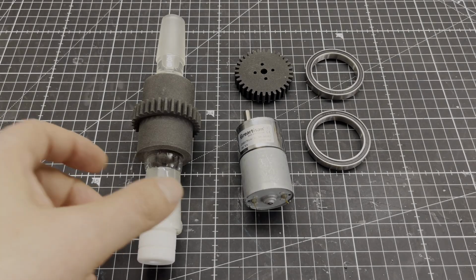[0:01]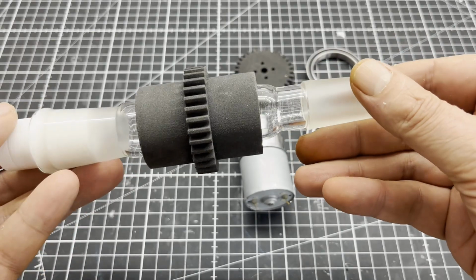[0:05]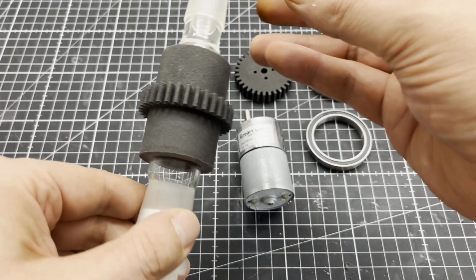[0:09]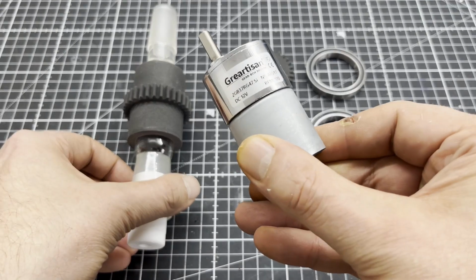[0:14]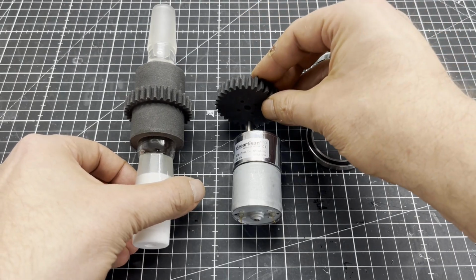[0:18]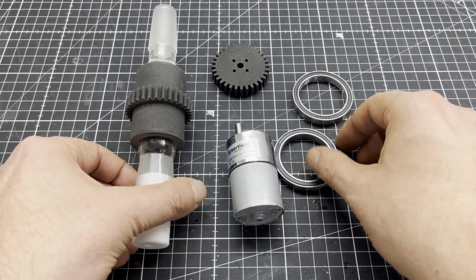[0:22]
The project started with two 3D printed parts, a 24-40 ground glass joint adapter, a 12-volt geared motor and two ball bearings. The part on the adapter was printed to a press fit. I had to heat it with a hot air gun to insert the adapter. The white plug is a Teflon overhead stirrer bearing. You can get it for a few bucks on AliExpress.
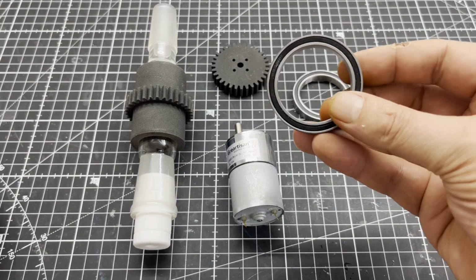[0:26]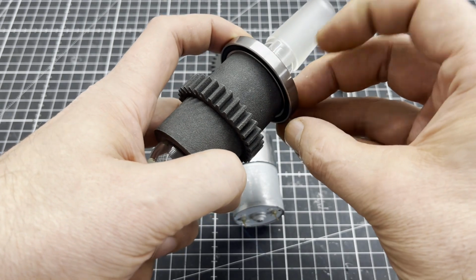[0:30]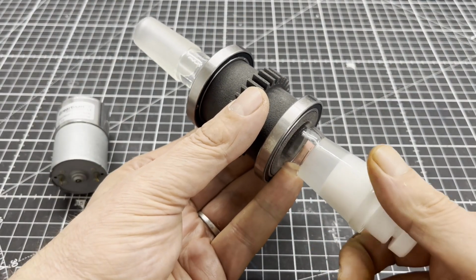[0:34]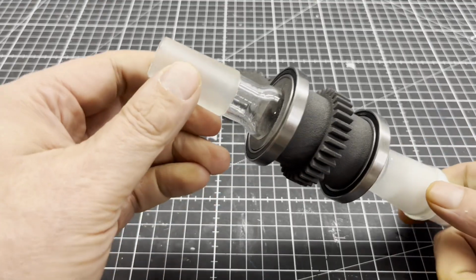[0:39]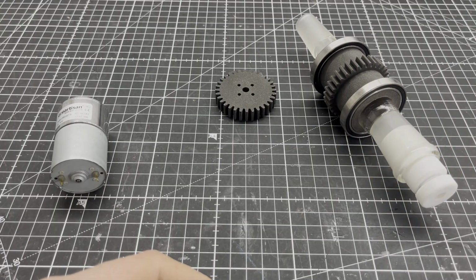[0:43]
The 3D printed part on the adapter is also designed to secure the ball bearings by press fit. I used my vise to press them onto the 3D printed part.
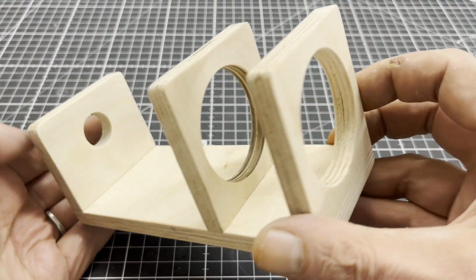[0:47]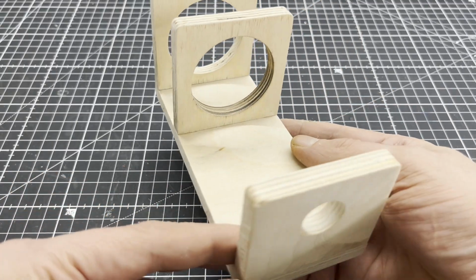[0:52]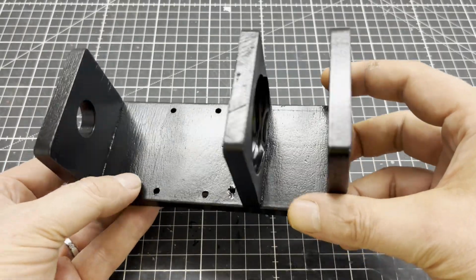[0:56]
Next, I built a mounting bracket out of 10mm marine plywood. I plan to 3D print this bracket for a second version of the rotovap as well. The mounting bracket was then painted 4 times.
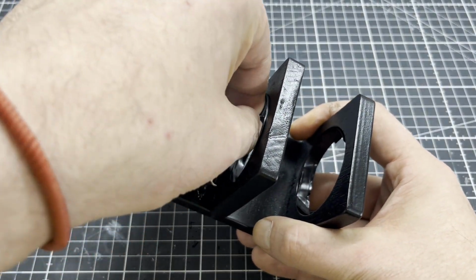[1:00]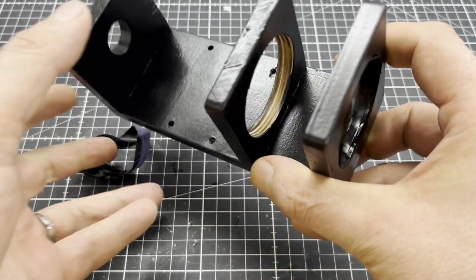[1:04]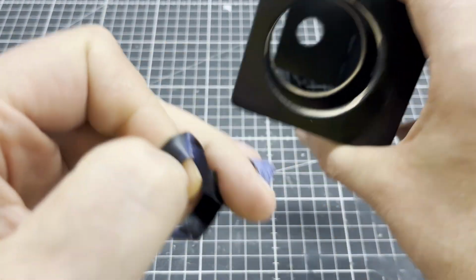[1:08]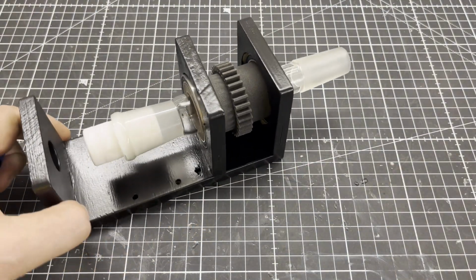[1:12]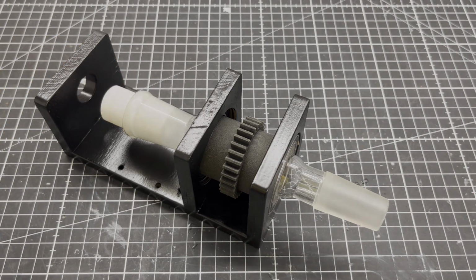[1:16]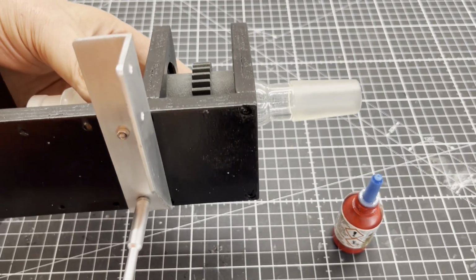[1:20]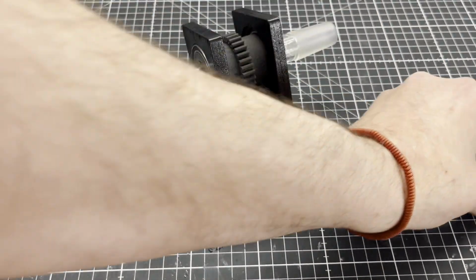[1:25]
This was followed by gluing the rotation unit in place using 2-component epoxy resin. The motor mount was made from a cut to size aluminium angle profile and some 4mm aluminium sheet.
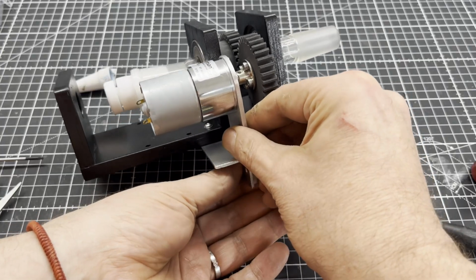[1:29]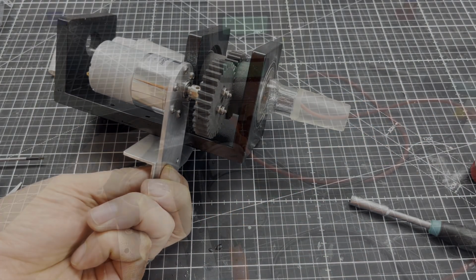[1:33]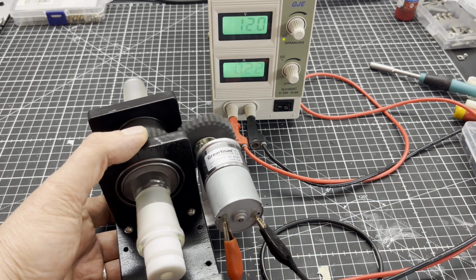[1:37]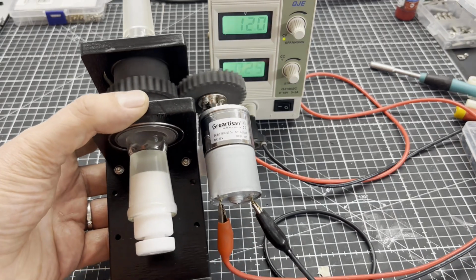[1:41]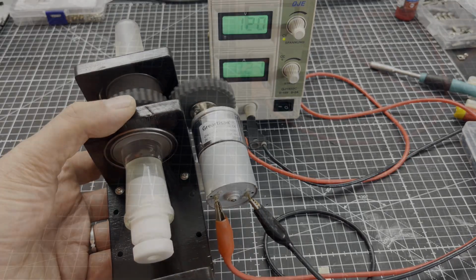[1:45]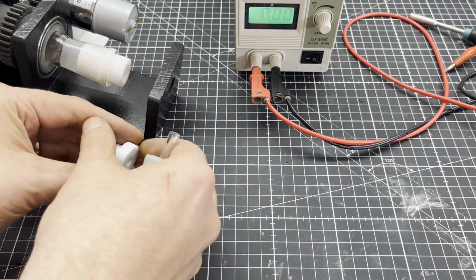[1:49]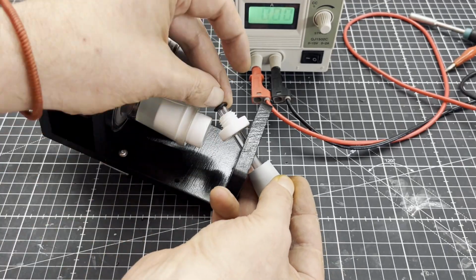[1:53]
This initial function test shows that the glass adapter is not a precision part and has a significant amount of runout. Of course, I had already thought about this beforehand and used a rubber stopper as a buffer, which also has the advantage that the glass tube does not rotate.
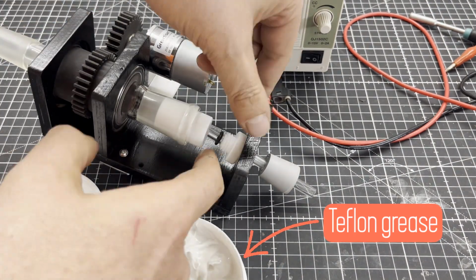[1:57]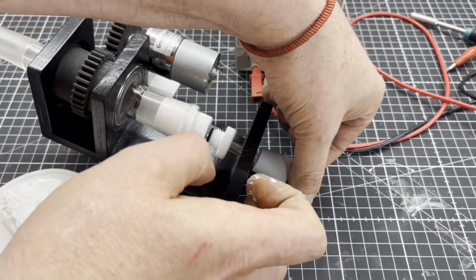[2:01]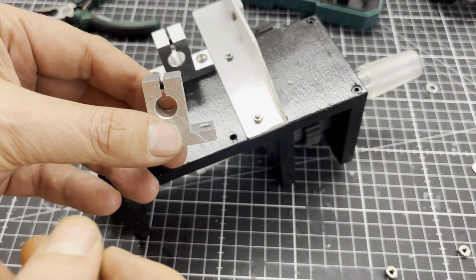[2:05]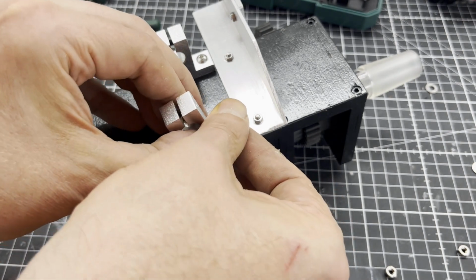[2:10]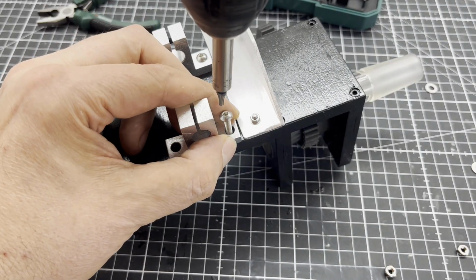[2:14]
Since the rotation unit needs to be tiltable, I screwed on 2 axle holders for 10mm axles. They have grub screws for fixing the axle. They are normally used to build 3D printers or small CNC routers.
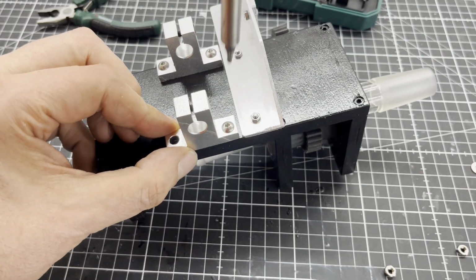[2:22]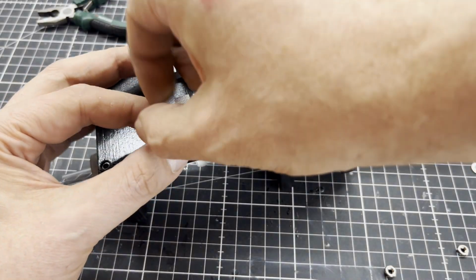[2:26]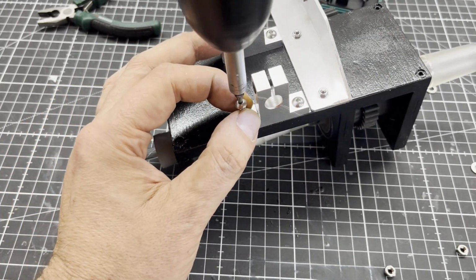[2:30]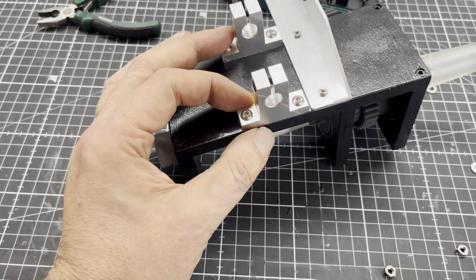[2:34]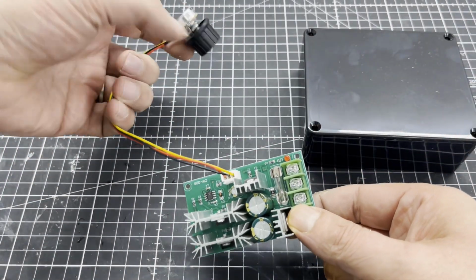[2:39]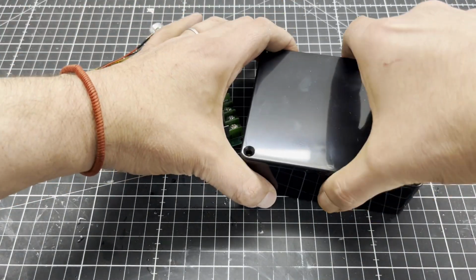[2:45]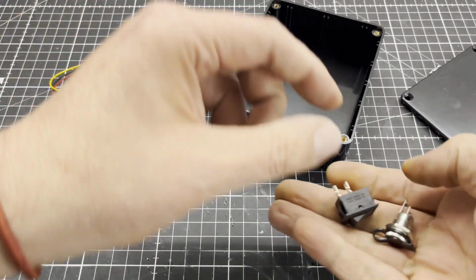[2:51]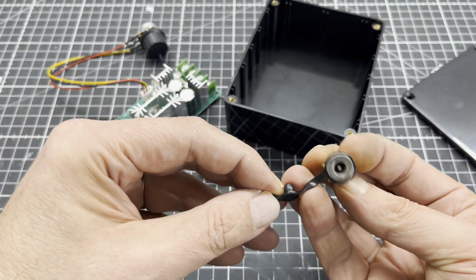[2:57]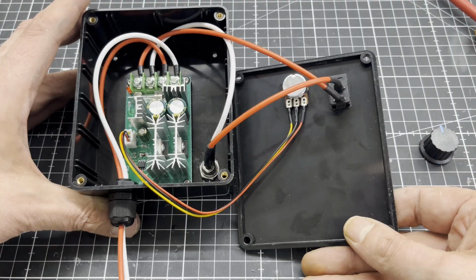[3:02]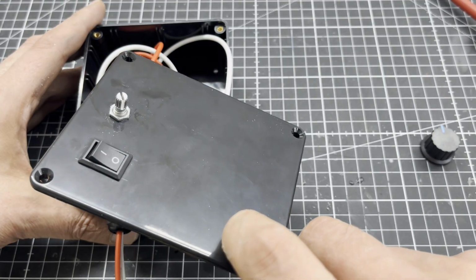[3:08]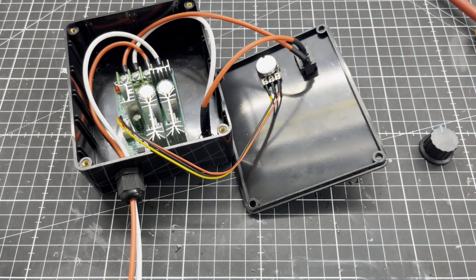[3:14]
The next thing I did was to take care of the geared motor control. In addition to a few small parts, I used a 12-volt speed controller, which you can get for about 10 bucks on Amazon, and a suitable plastic box. Here you can see the whole thing wired up. I also made a bracket out of 3mm aluminium sheet.
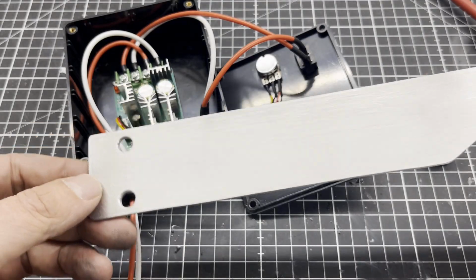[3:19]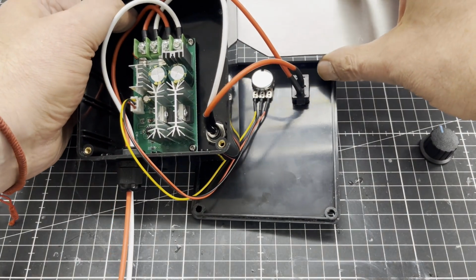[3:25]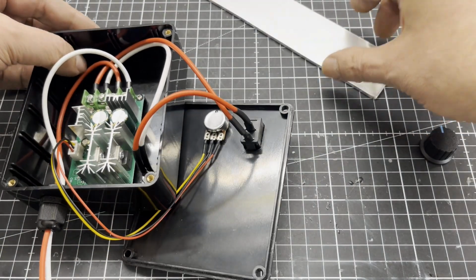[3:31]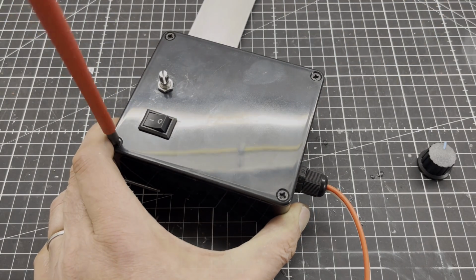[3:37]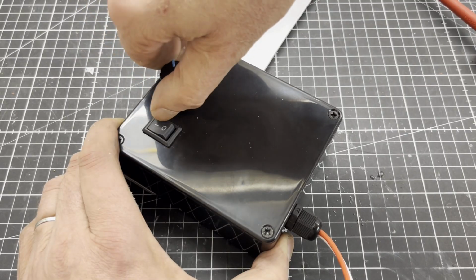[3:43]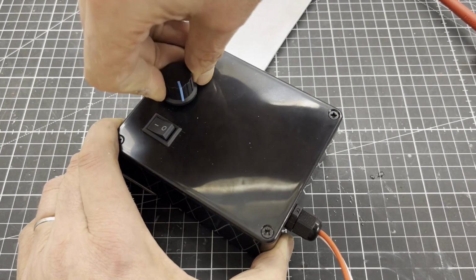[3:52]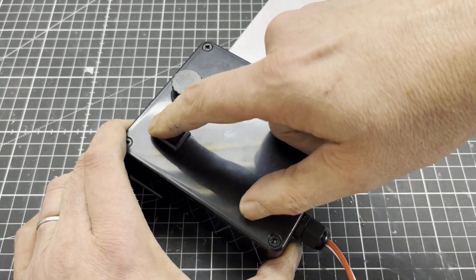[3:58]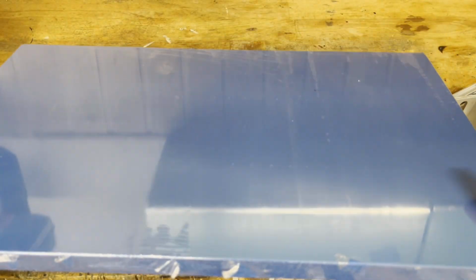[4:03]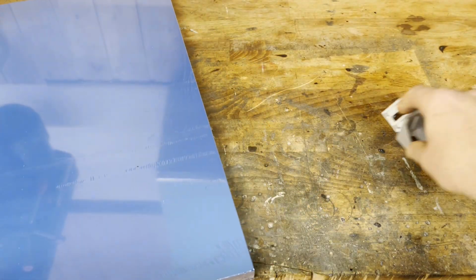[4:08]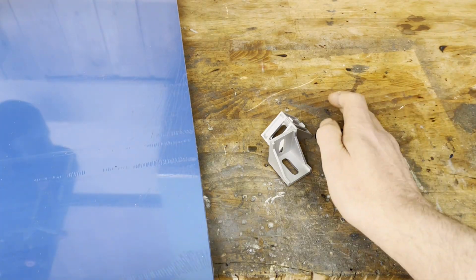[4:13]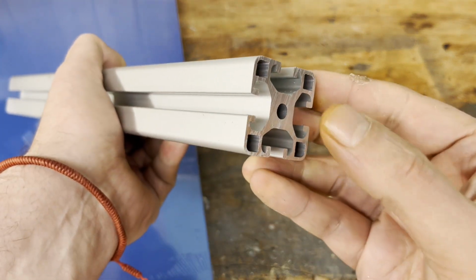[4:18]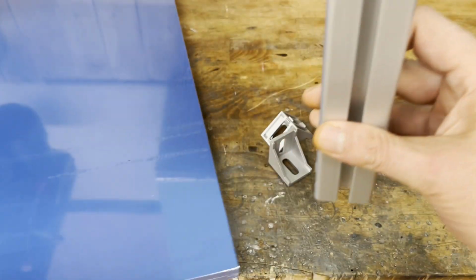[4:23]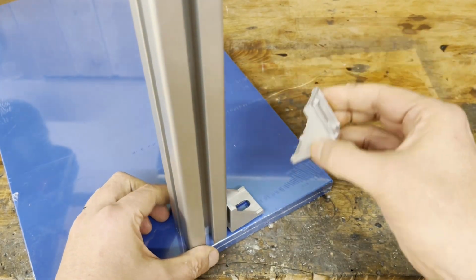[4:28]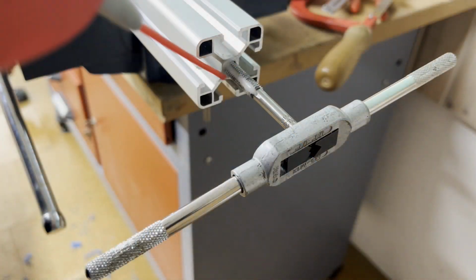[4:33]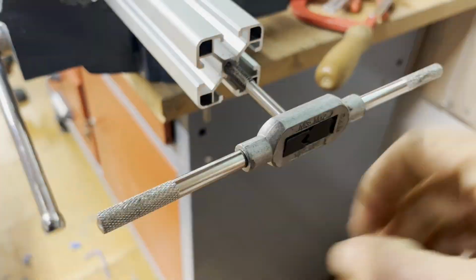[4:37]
One of my famous blue kitchen boards measuring 500 by 300 by 20 millimeters served as a base plate again. In the following, I used 40-40 aluminium extrusion profiles and accessories for them. In total, I used 3 profiles, one with a length of 400 mm shown here, one with a length of 500 mm and one with a length of 100 mm. The aluminium profiles have a continuous 6 mm hole in the center for cutting an M8 thread for mounting.
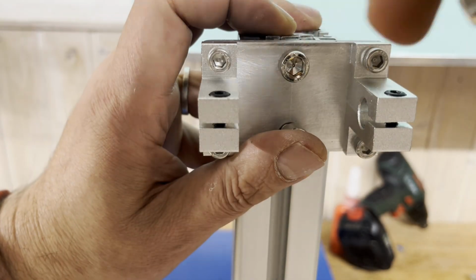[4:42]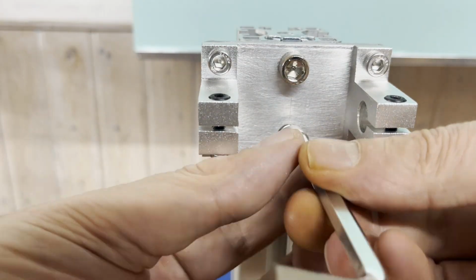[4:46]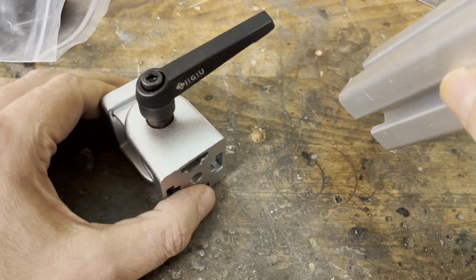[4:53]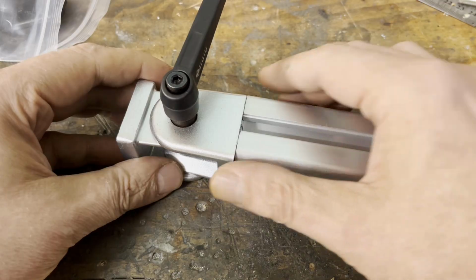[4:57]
Another axle holder, which I made off camera, was then attached to the 400 mm extrusion profile. It can be adjusted in height. The various accessories for the 40-40 extrusion also include the hinge shown here.
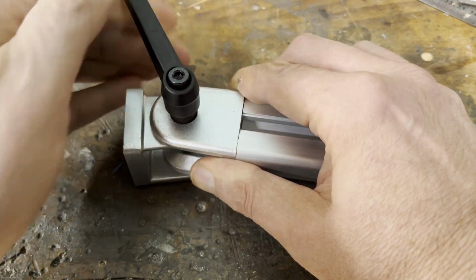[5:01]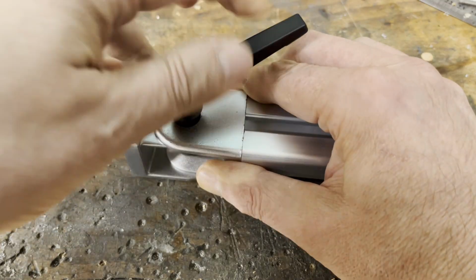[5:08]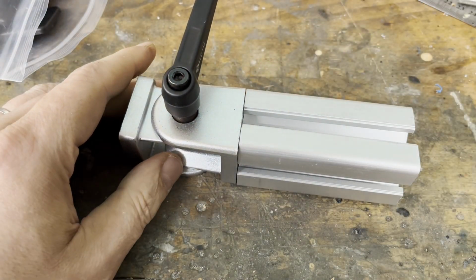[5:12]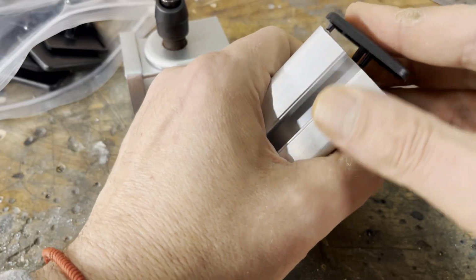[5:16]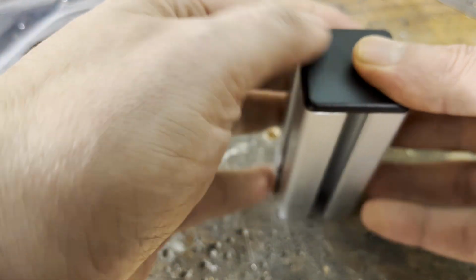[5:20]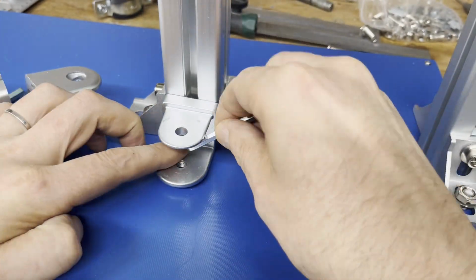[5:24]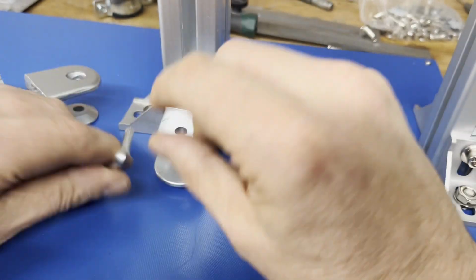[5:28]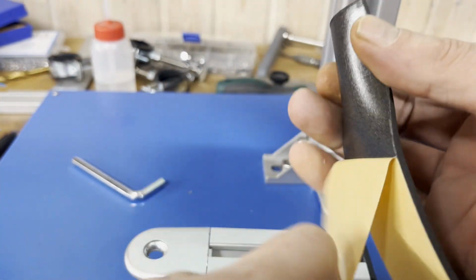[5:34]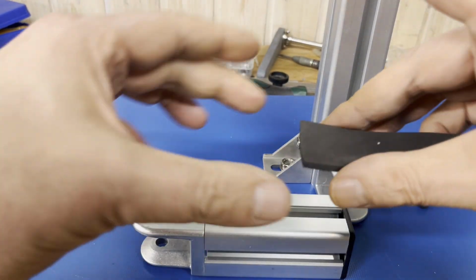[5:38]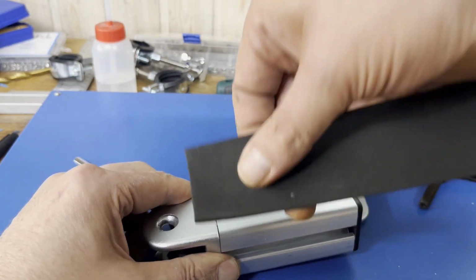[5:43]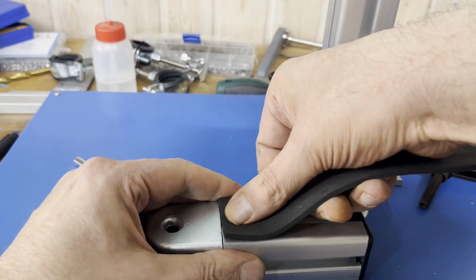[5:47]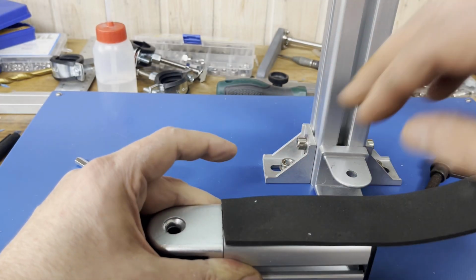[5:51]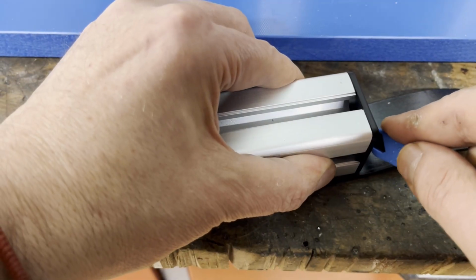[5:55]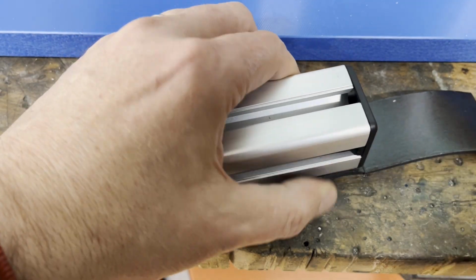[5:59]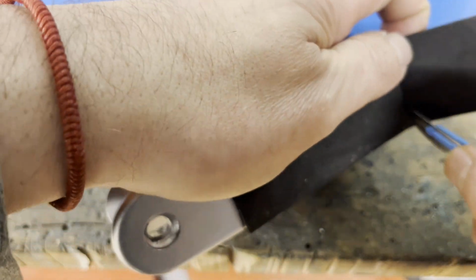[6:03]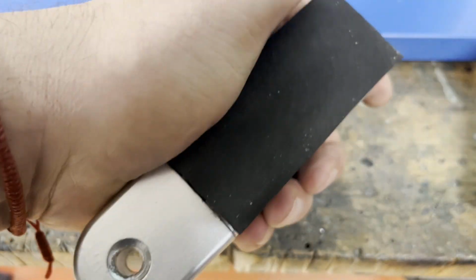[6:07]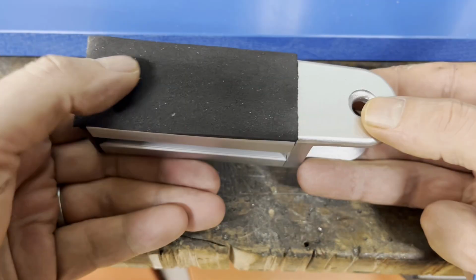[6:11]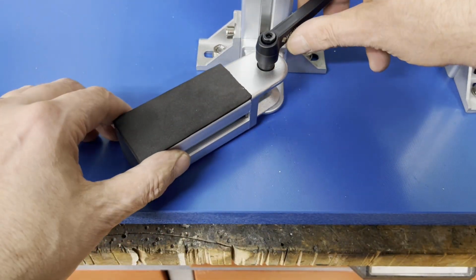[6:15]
The hinge was then screwed onto the 500 mm long extrusion, which I had meanwhile also mounted on the base plate. Next, I covered the top of the 100 mm long extrusion with self-adhesive foam rubber tape. You will see later in the video what function the hinge fulfills.
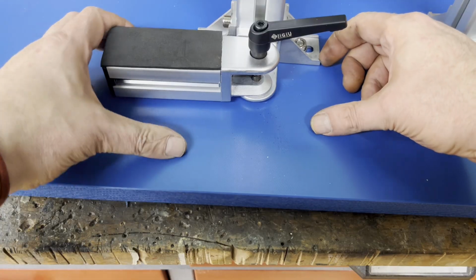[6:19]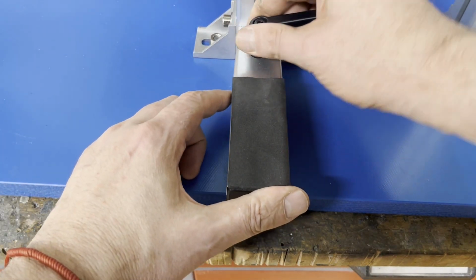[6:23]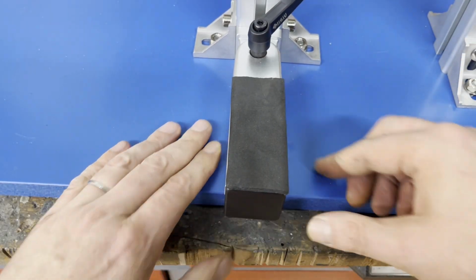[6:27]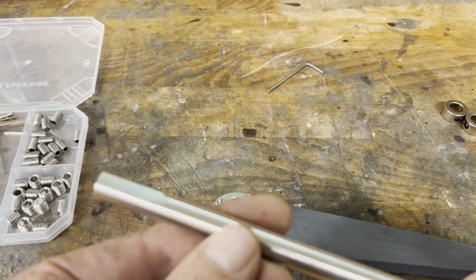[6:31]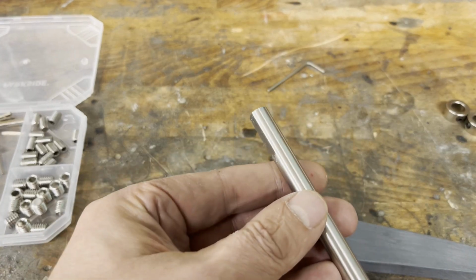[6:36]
The pivot axle was made from a 10 mm stainless steel rod and the adjustment lever from 12 mm PVC sheet. A matching flange serves as a connector.
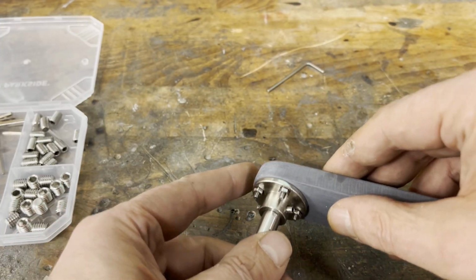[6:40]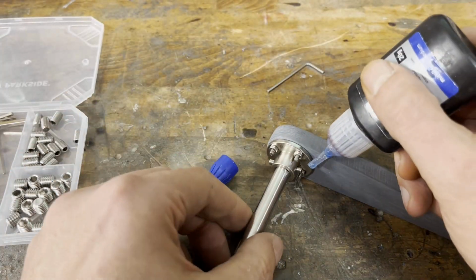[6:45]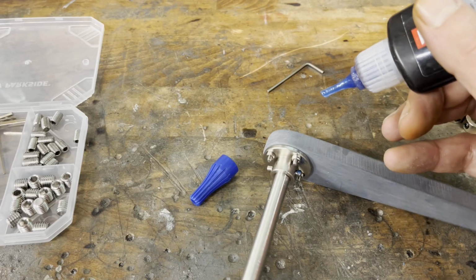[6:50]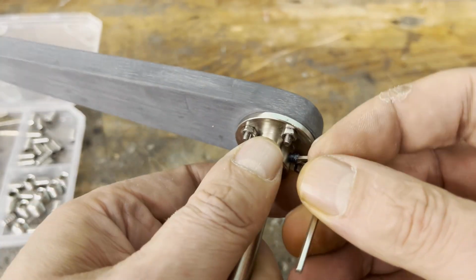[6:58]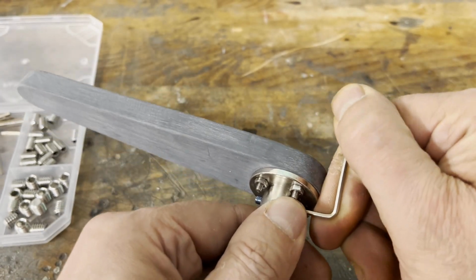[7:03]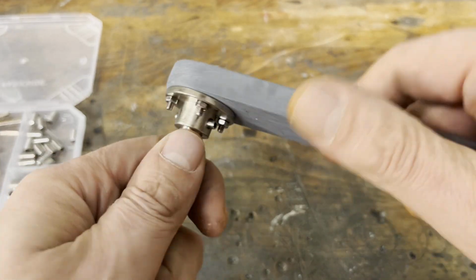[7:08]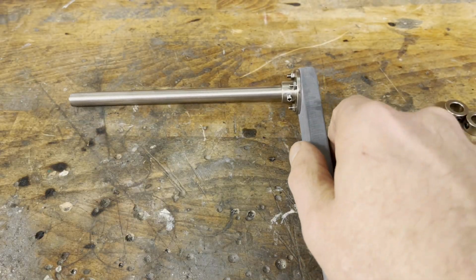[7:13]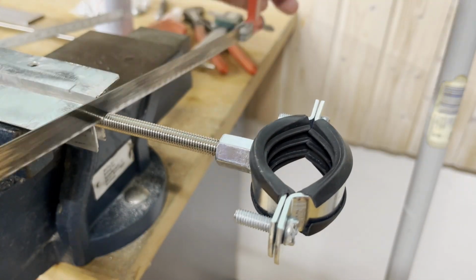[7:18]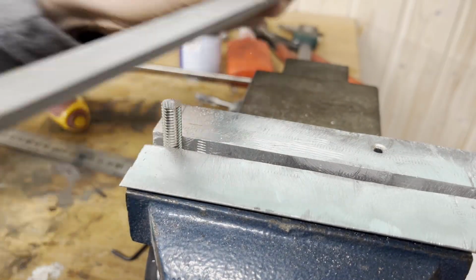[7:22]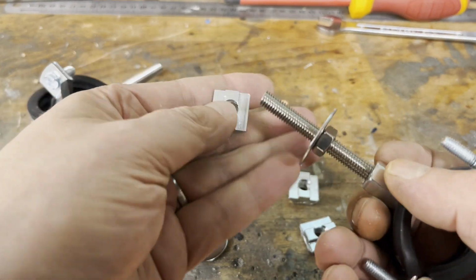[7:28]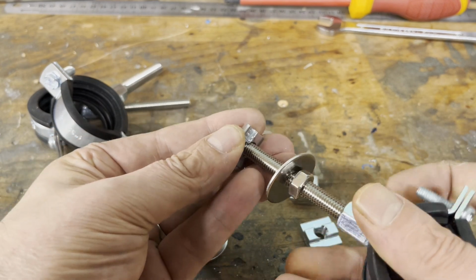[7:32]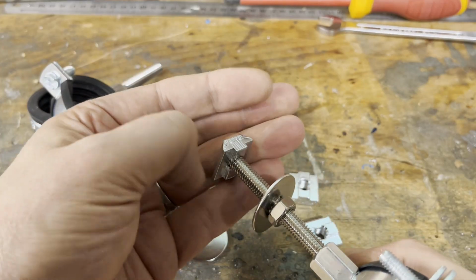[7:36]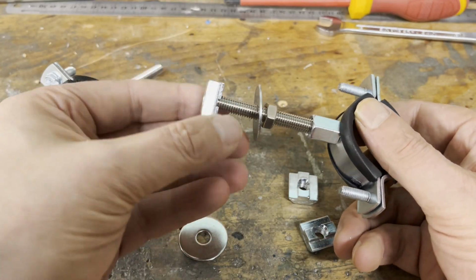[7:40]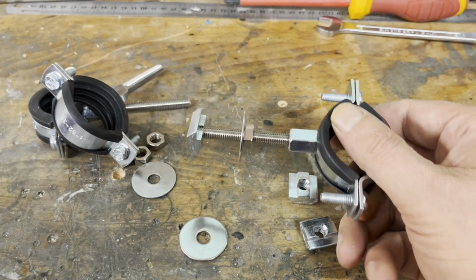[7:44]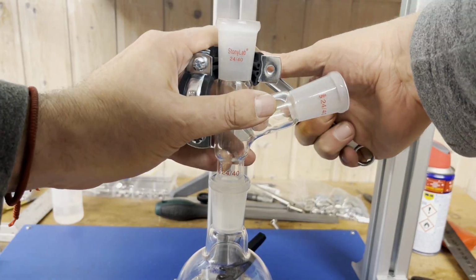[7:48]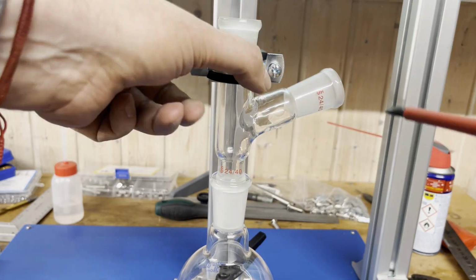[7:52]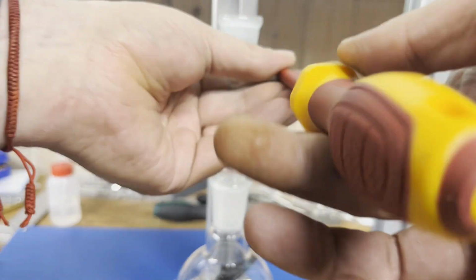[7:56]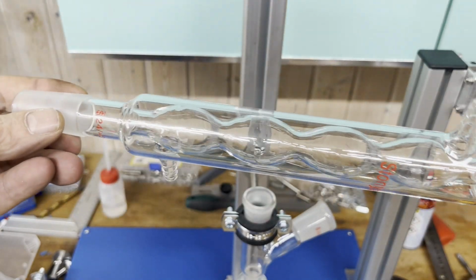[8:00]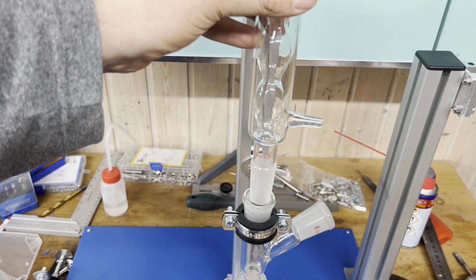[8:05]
As usual, I use pipe clamps and 8 mm threaded rods to mount the glassware. Since we are working with reflux here, I'm using a 200 mm long Allihn condenser.
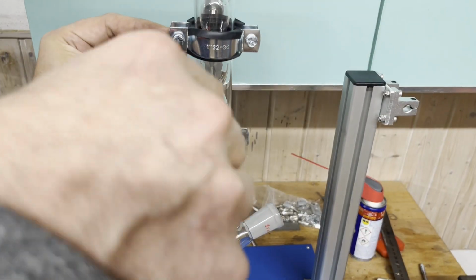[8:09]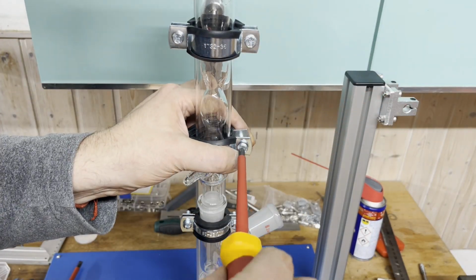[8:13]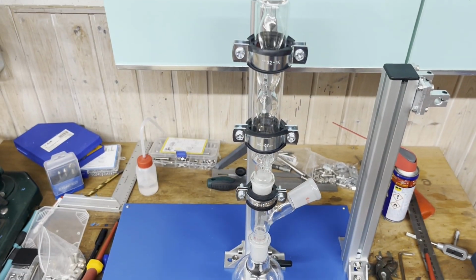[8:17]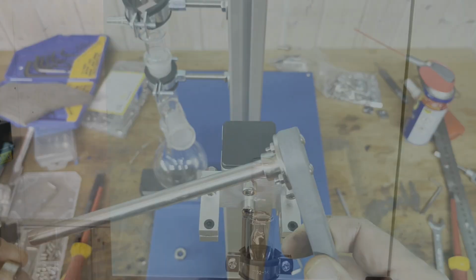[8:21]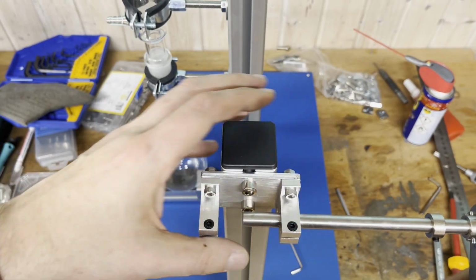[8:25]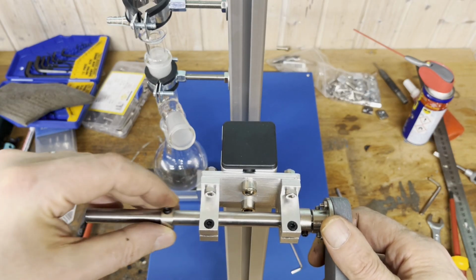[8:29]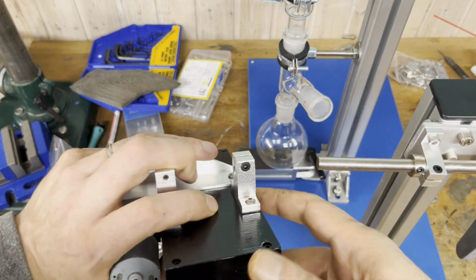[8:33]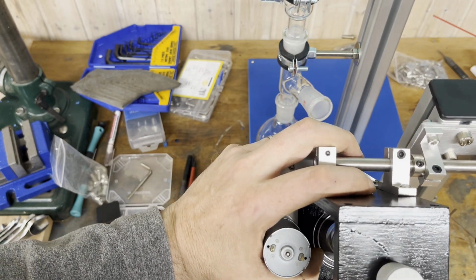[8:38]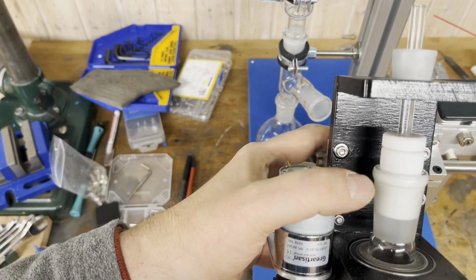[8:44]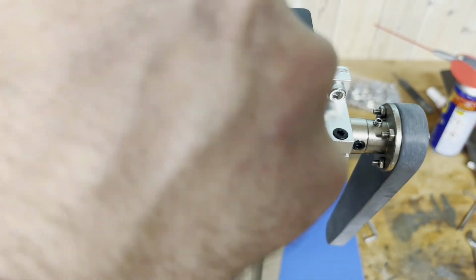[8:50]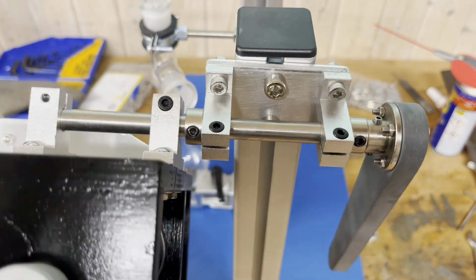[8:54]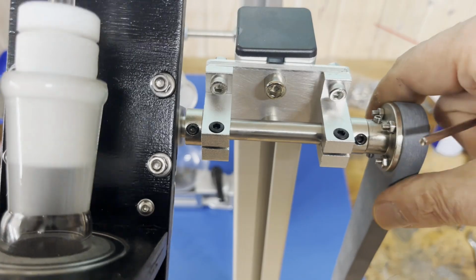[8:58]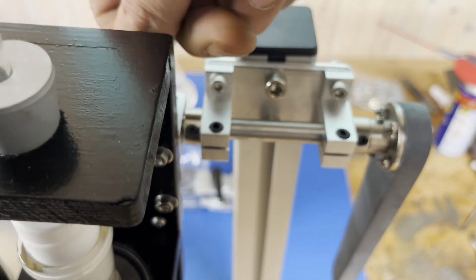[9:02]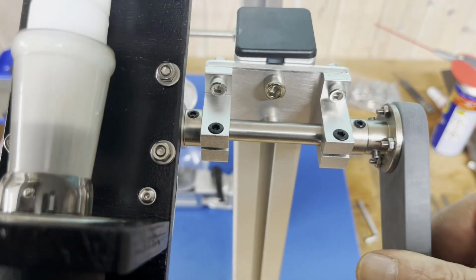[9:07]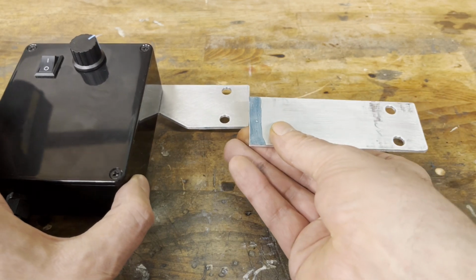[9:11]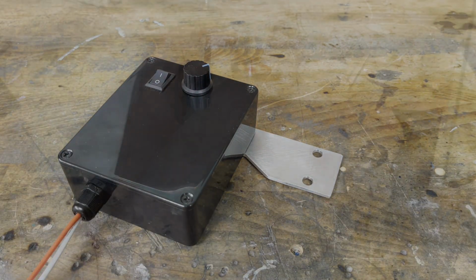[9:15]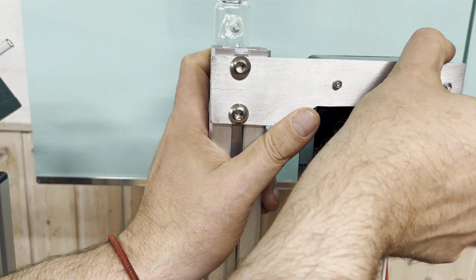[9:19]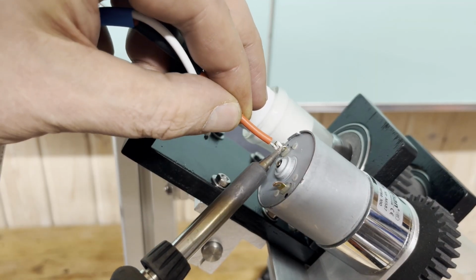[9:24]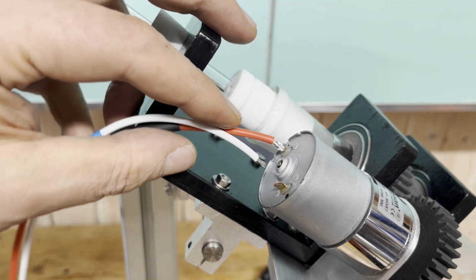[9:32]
I had to shorten the bracket for the electronics box before mounting it. The direction of rotation of the geared motor is important. It must rotate in the same direction as the compression fitting of the Teflon overhead stirrer bearing is screwed in, otherwise the fitting will loosen with time.
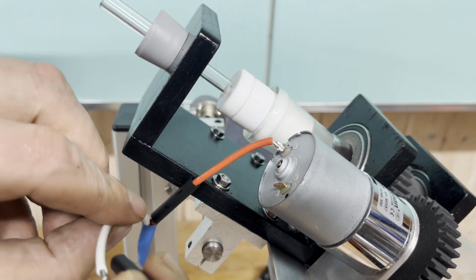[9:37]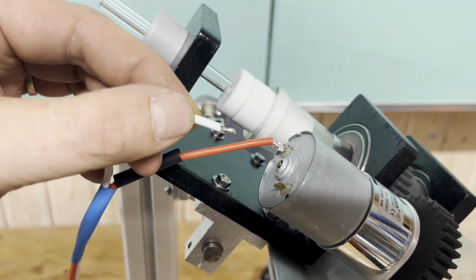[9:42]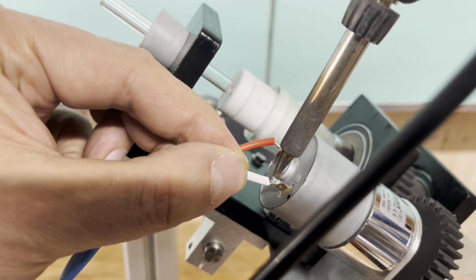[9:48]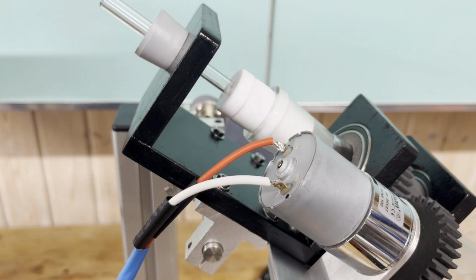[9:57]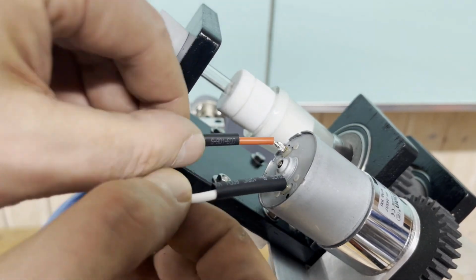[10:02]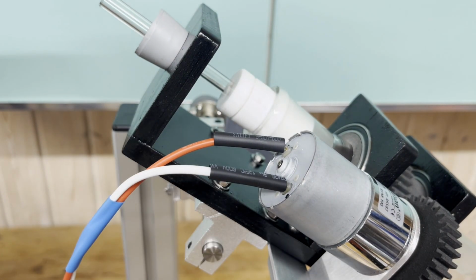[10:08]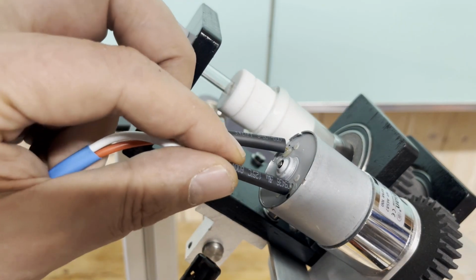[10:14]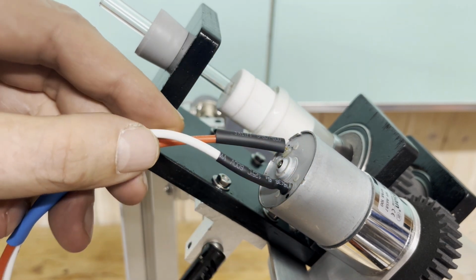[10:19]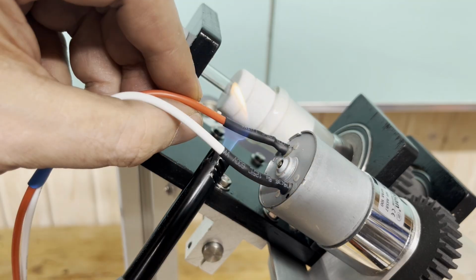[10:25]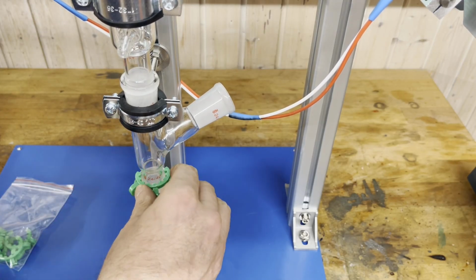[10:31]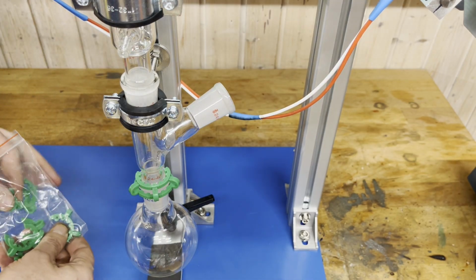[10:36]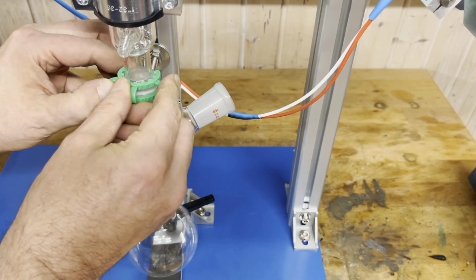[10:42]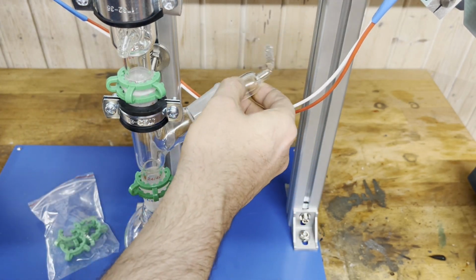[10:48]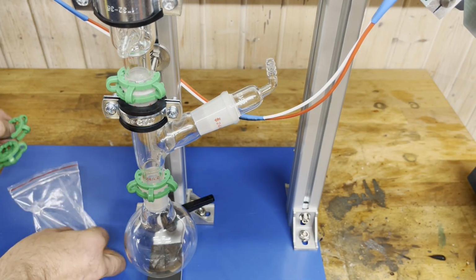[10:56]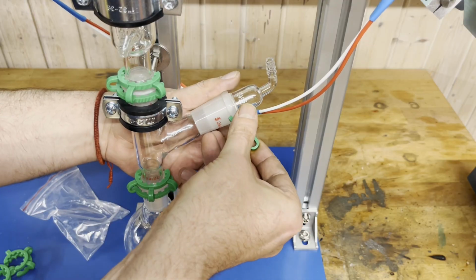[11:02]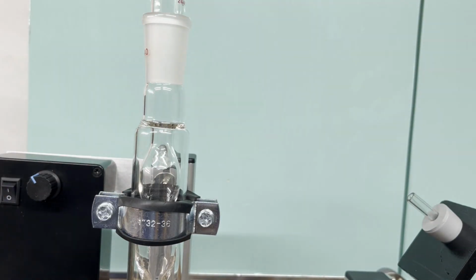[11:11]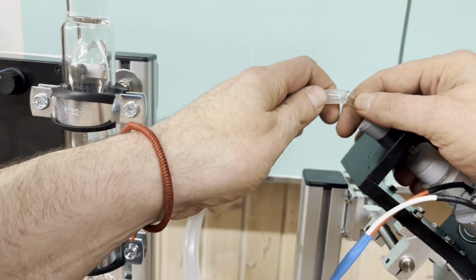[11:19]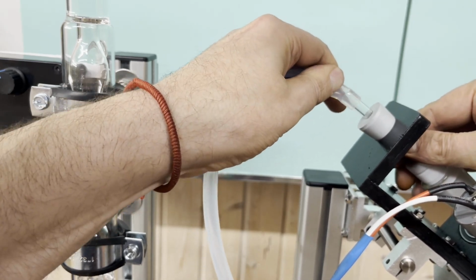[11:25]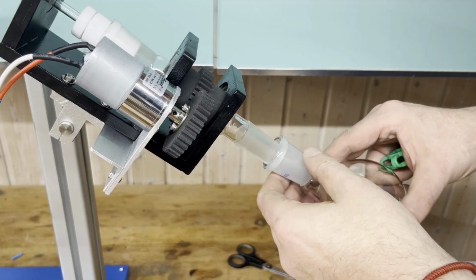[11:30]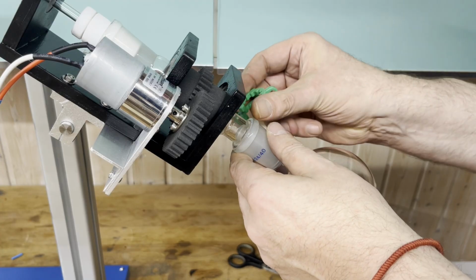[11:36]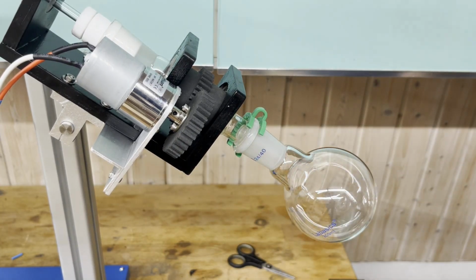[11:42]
And here you have it, the finished DIY rotovap. So let's test it.